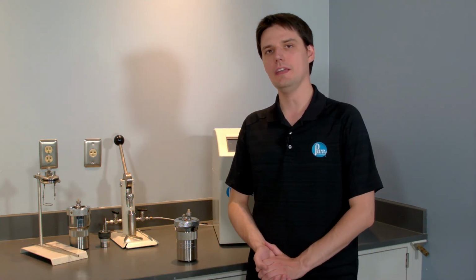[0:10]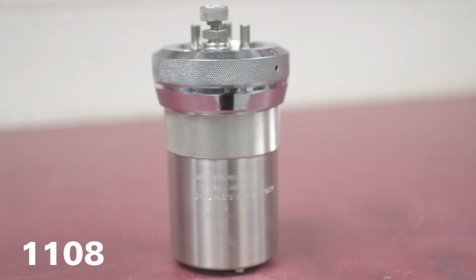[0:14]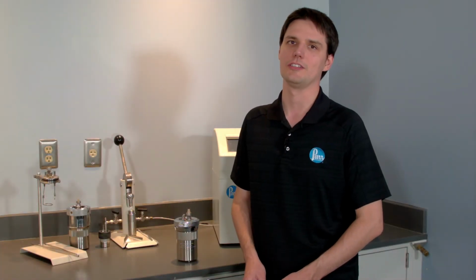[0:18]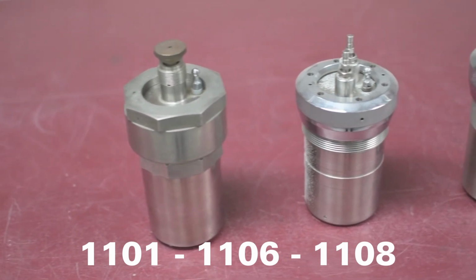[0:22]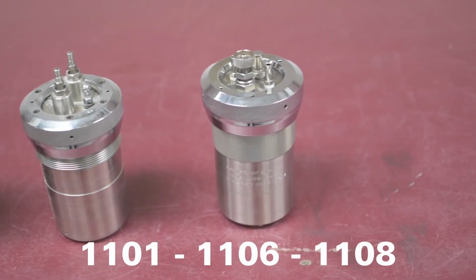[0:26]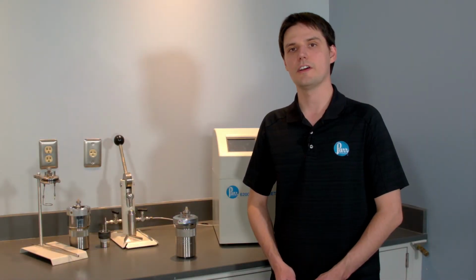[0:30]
Today we're gonna do the maintenance on the well-known Parr 1108 Oxygen Combustion Vessel. This vessel takes its roots in the early days of Parr at the end of 19th century. After numerous improvements, this design turned into the 1108 series back in 1960s. It is still massively popular and is used in a wide variety of applications. Beyond standard variants, it has been customized and tailored in every imaginable way for the variety of special use cases.
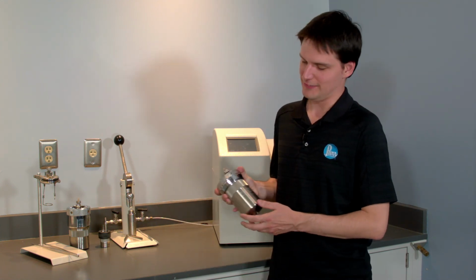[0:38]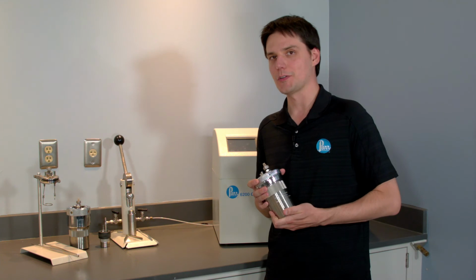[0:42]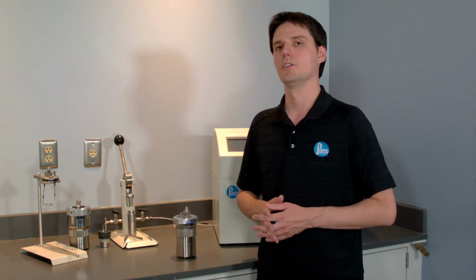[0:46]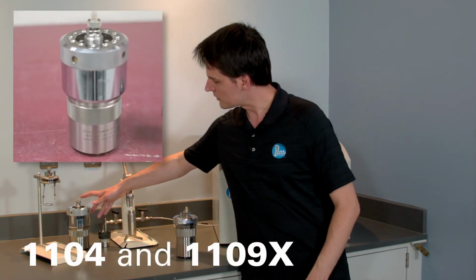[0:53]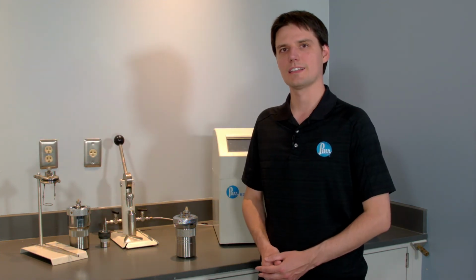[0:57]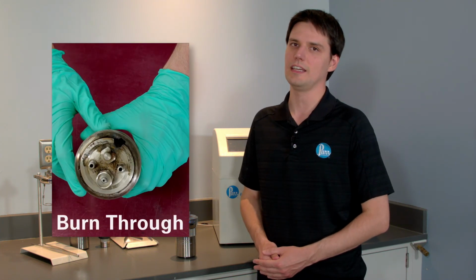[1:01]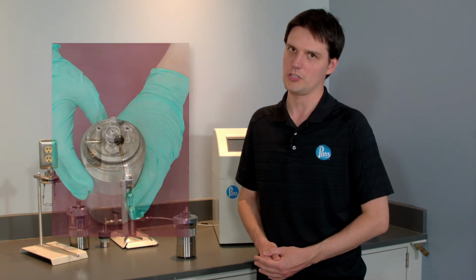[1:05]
This is a durable vessel, if one takes good care of it. To make it last, do the maintenance regularly. If even one O-ring needs to be replaced, you must replace them all. Do not overpressurize it and avoid explosives and violently burning compounds. We have special reinforced vessels for the energetic material. Watch carefully for the corrosion and inspect O-rings and sealing surfaces often. If the O-ring cannot contain the reaction, the vessel will turn into a high-temperature torch.
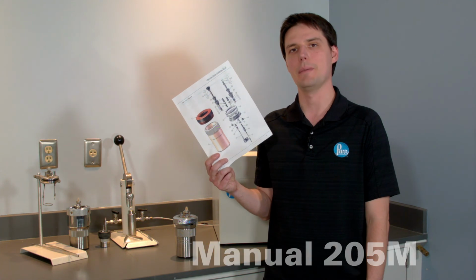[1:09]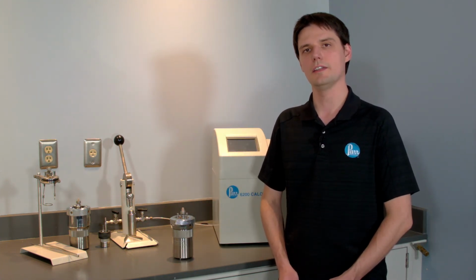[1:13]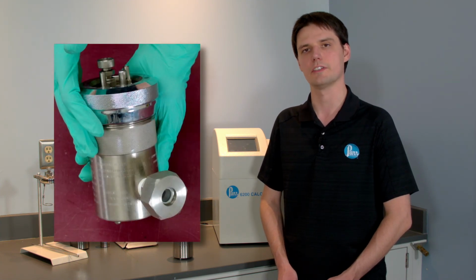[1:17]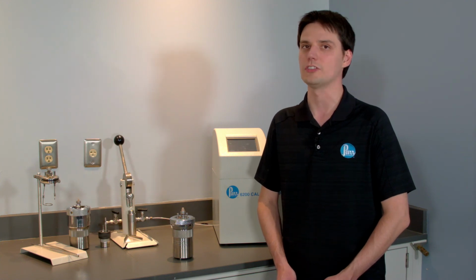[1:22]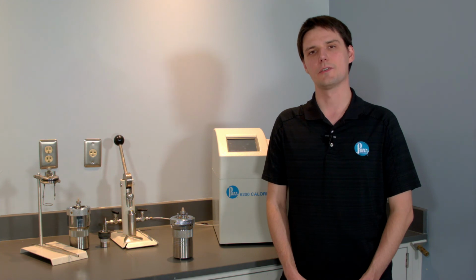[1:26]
Before you begin, grab your own copy of 205M manual. If you have a non-standard 1108 vessel, like with platinum electrodes, custom alloy electrode, pressure transducer, custom fittings, or other custom parts, refer to your specific manual or give us a call for further assistance. Wear protective gloves, glasses, and other applicable protective equipment.
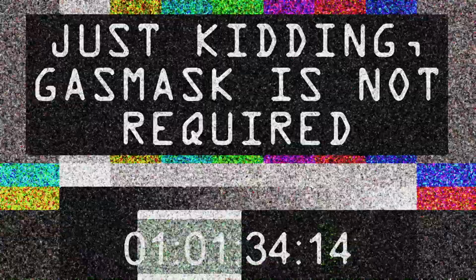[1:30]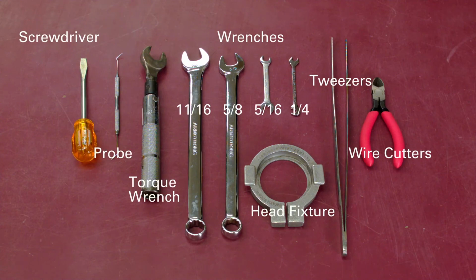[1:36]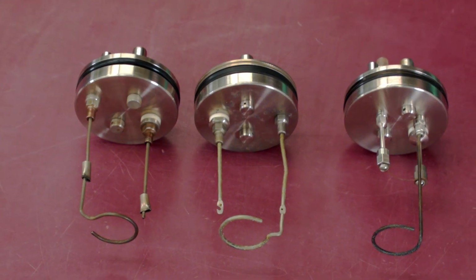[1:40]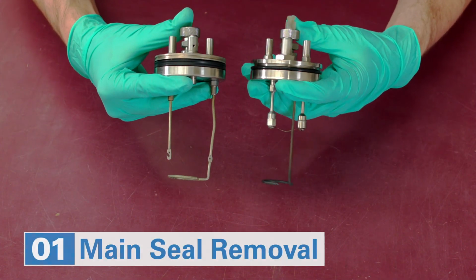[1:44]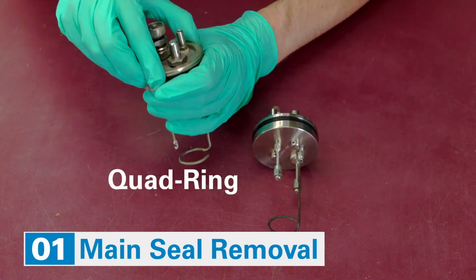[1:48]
Prepare the following tools. There are different variants of heads, but they all have just three standard types of assemblies to be serviced: needle valve, check valve, and isolated electrode. Remove the main seal. This will be an O-ring in the self-sealing style or quad ring in case of the compression sealing style.
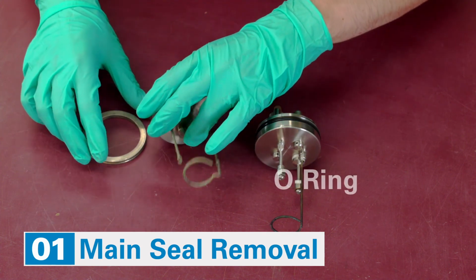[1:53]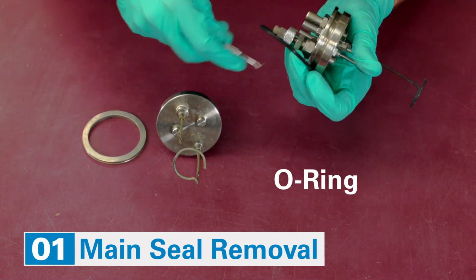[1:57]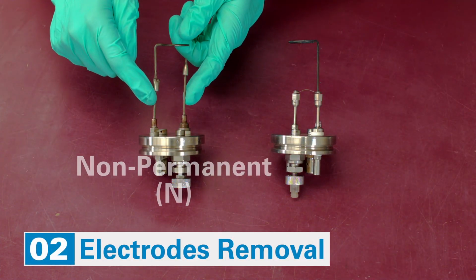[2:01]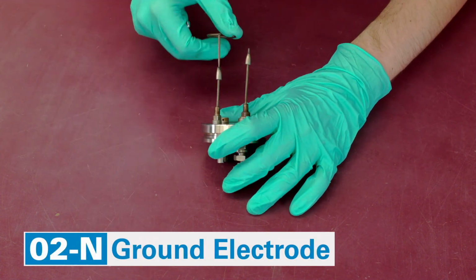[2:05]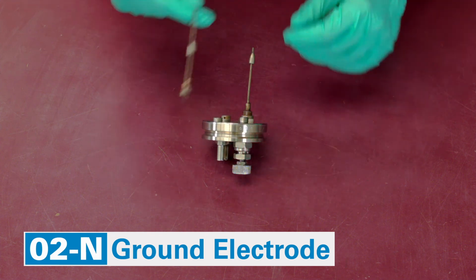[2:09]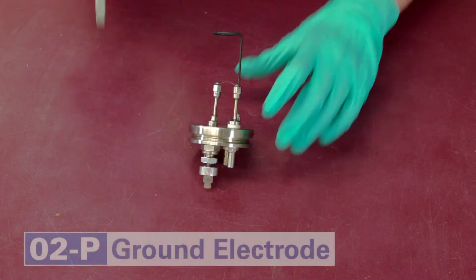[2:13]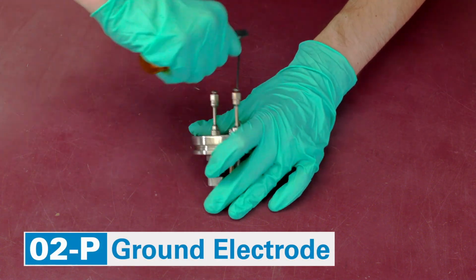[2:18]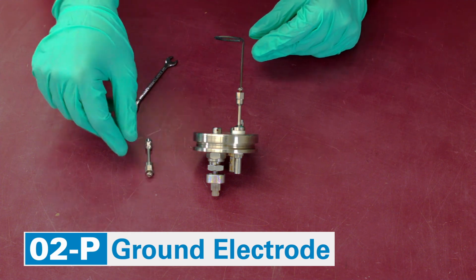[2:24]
Remove the electrodes and the loop holder. There are two electrode styles. Nonpermanent style electrodes are attached to adapters and secured with lock nuts. Loosen the nuts and unscrew electrodes. For permanent electrodes, remove the fuse wire between the electrodes. Then remove the ground electrode. Similarly, remove the loop holder.
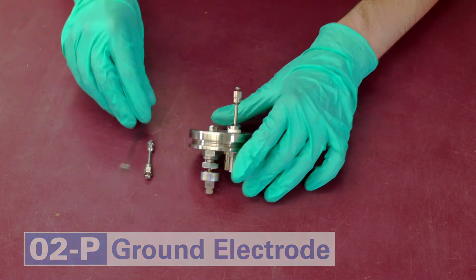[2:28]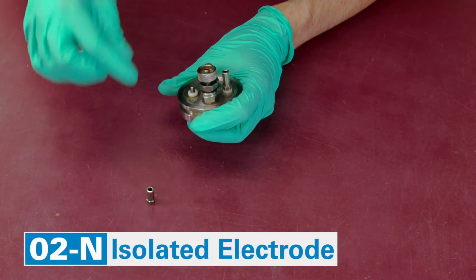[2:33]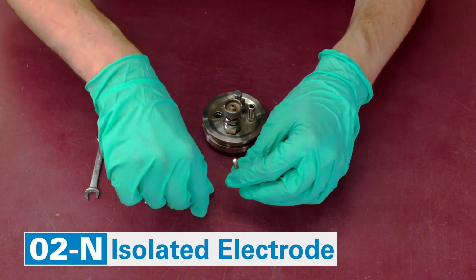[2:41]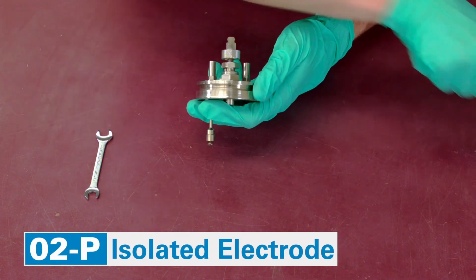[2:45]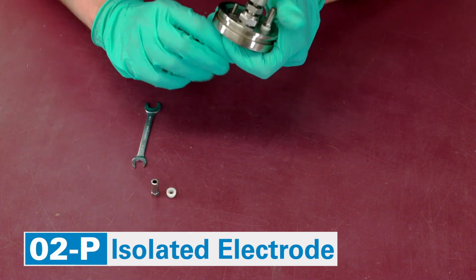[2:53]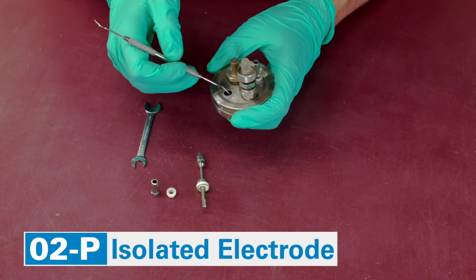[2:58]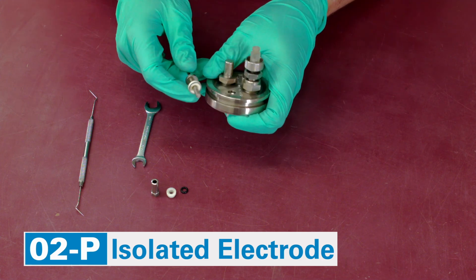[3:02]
Now remove the isolated electrode. Remove the terminal nut and the insulator. Pull out the electrode and extract the O-ring. For permanent electrodes, remove the terminal nut and the insulator. Pull out the electrode and extract the O-ring. Sleeve insulator may need to be convinced a bit more.
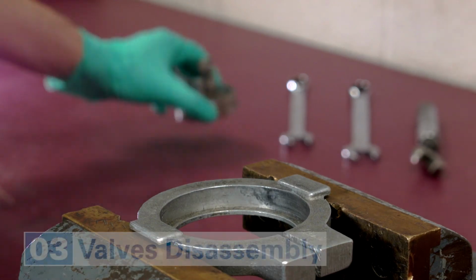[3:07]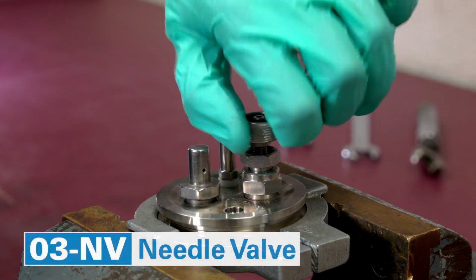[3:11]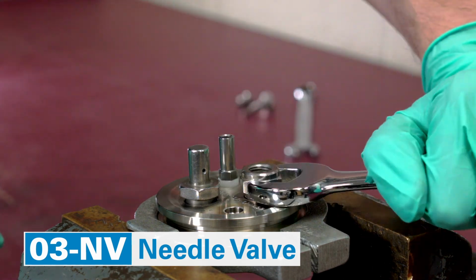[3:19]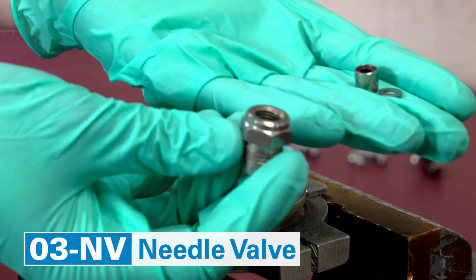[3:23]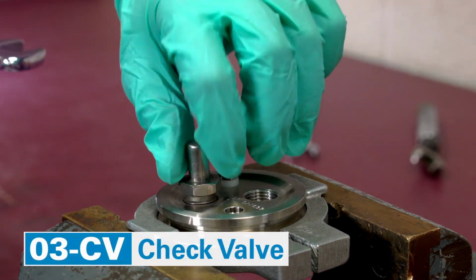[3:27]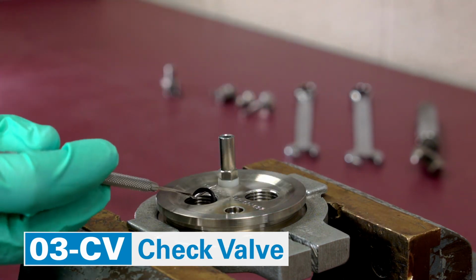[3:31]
Now it is time to put the head in the fixture and tighten it securely in the vise. Disassemble needle valve assembly. Remove the needle and then start disassembling the body by removing the compression nut. Then remove the rest of the body and do not forget to remove the valve seat. Move to the check valve. Remove the inlet valve body. Grab a check valve. Sometimes check valve is stuck. Tapping the fitting is usually sufficient to dislodge it.
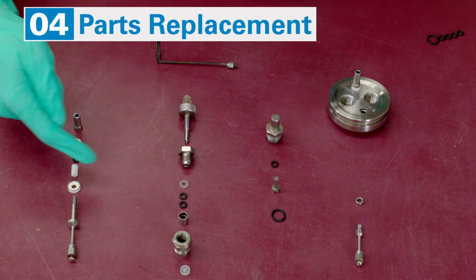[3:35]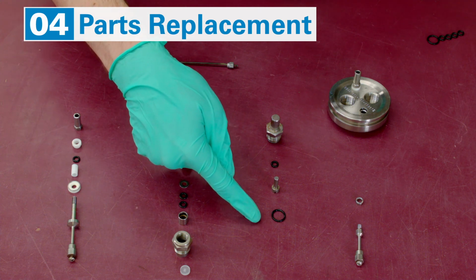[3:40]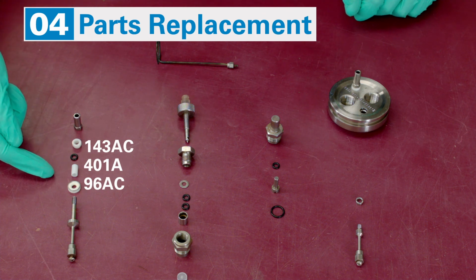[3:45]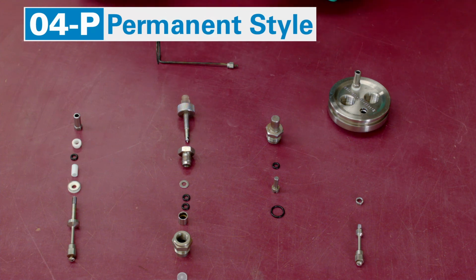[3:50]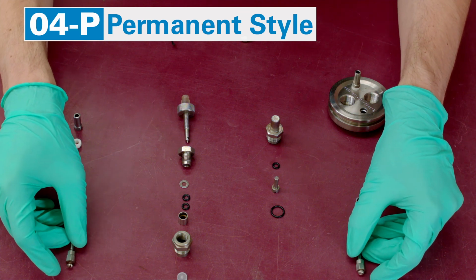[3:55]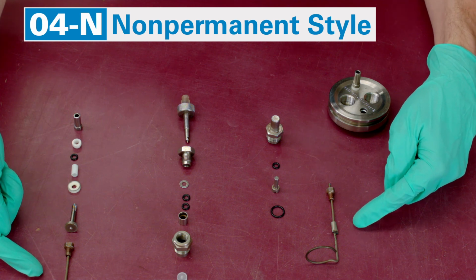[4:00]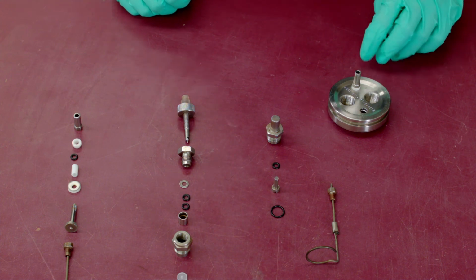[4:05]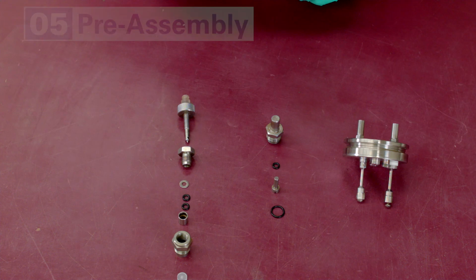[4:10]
Replace the following O-rings. And the valve seat. If the non-metal parts of the electrode are damaged, replace them as well. Inspect the sample loop holder, replace it as needed. Permanent electrode screws also need to be replaced if they are damaged. If non-permanent electrodes are in bad shape, replace them. The outside ground electrode normally does not require cleaning. However, if it exhibits unusually high resistance, disassemble and clean it as well.
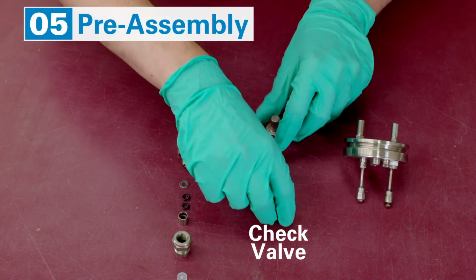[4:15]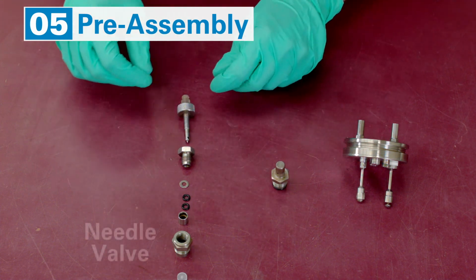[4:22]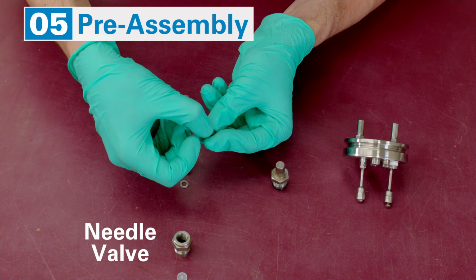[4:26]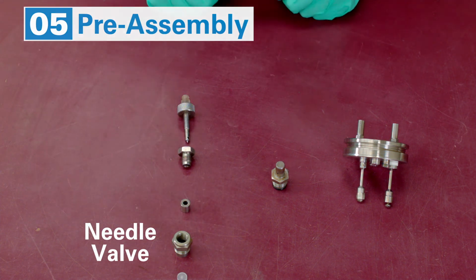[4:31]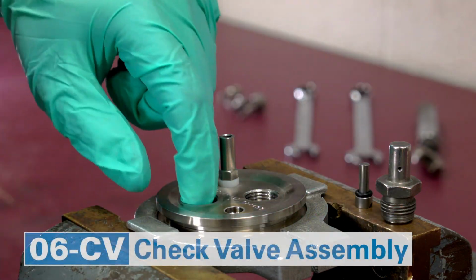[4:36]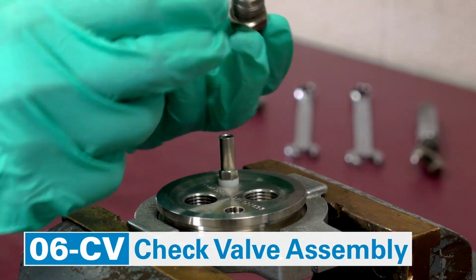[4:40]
Prepare the assemblies. Put an O-ring on the check valve and also prepare the O-ring for the check valve body. Put two fresh O-rings in a packing cup and cover them with a washer. Reassemble the check valve. Drop the O-ring in the port. Put an assembled check valve pin in the body and screw it in the port. First using fingers and then finish tightening it with a wrench, metal to metal.
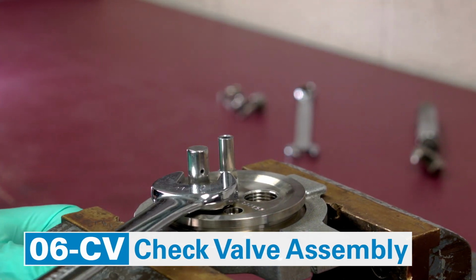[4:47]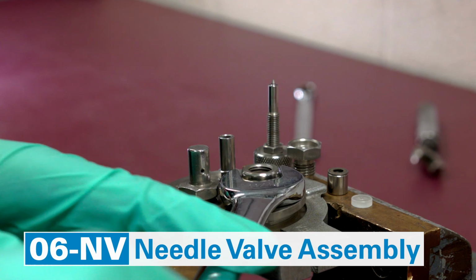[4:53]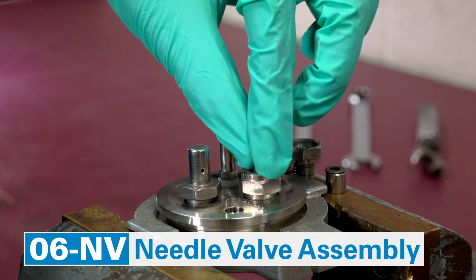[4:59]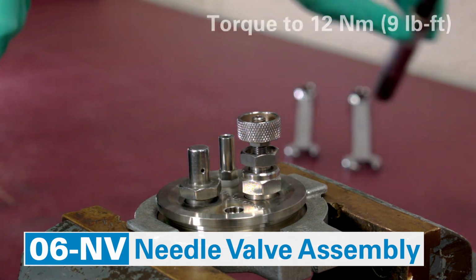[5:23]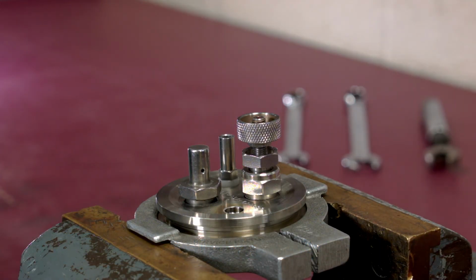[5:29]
Reassemble the needle valve. Screw in the outlet valve body and tighten it with a wrench, metal to metal. Drop the new valve seat into the body. Drop the assembled packing cup with the washer facing up. Note that there should be two O-rings in there. Screw in the compression nut until finger tight. Insert the needle assembly and screw it in until it's firm. Then loosen it one full turn. Take the torque wrench and torque the compression nut down to 12 Nm. Remove the head from the vise.
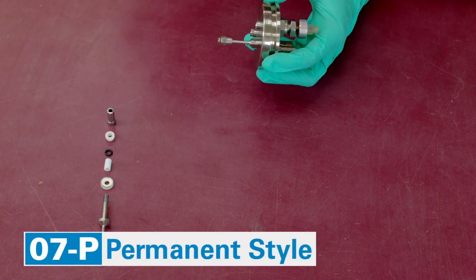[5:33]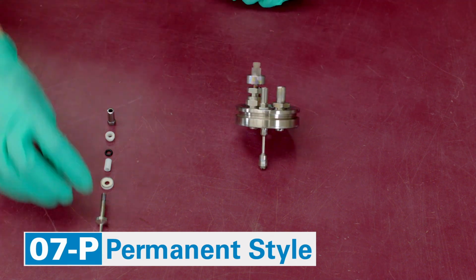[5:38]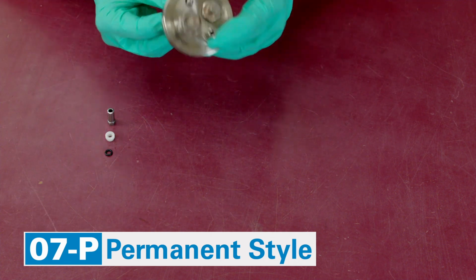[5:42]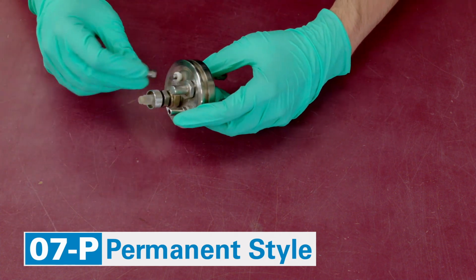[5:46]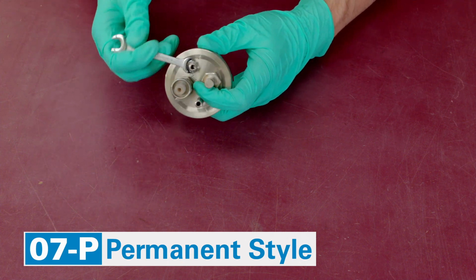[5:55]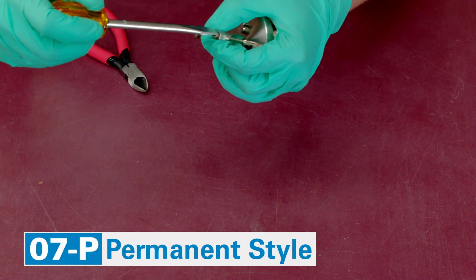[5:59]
For the permanent electrode configuration, attach permanent ground electrode. Assemble the isolated electrode core. Put a fresh O-ring and compress it with Delrin insulator. Tighten the terminal nut. Be careful that you do not over-tighten it, as you will crack the ceramic electrode insulator. Cut 5 cm of the fresh fuse wire and attach it to the electrodes using screws.
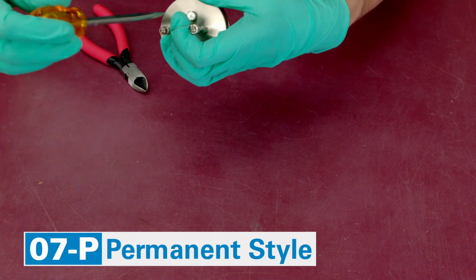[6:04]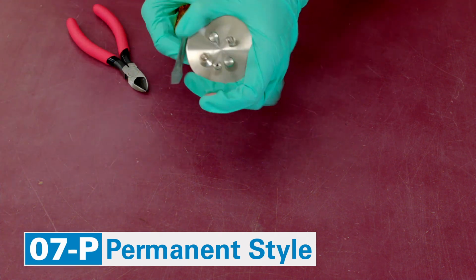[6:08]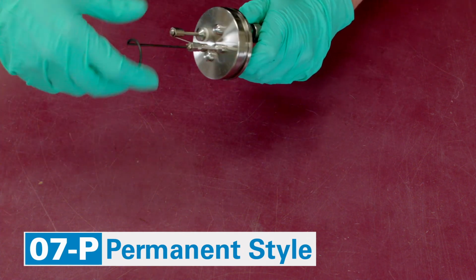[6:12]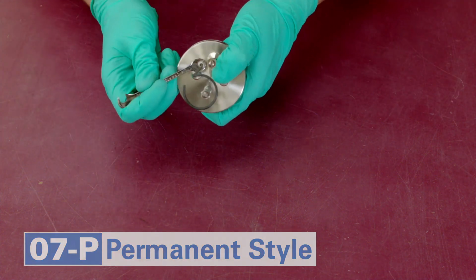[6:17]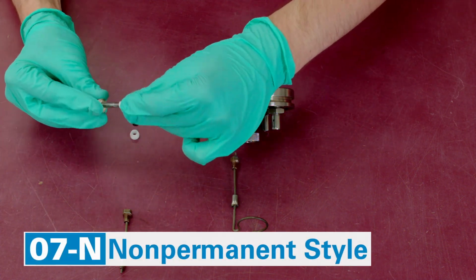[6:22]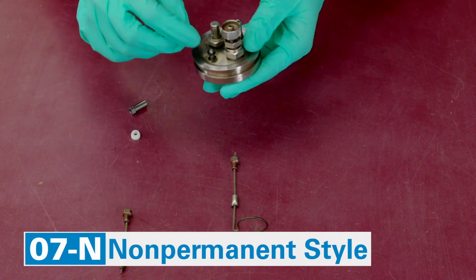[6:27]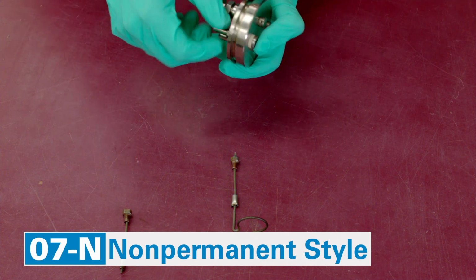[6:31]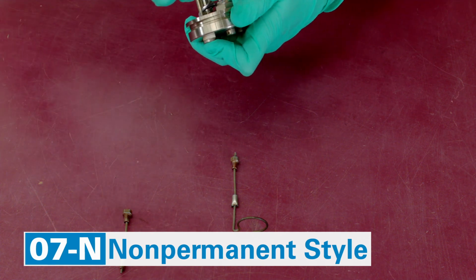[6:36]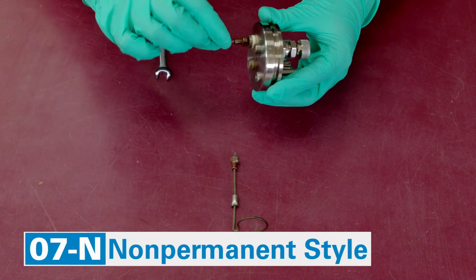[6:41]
Attach the capsule holder. The capsule holder comes in two styles. The newer one will have a permanent electrode style extension with a set screw. For the non-permanent electrode style, assemble the isolated electrode core. Put a fresh O-ring and compress it with Delrin insulator. Tighten the terminal nut. Be careful that you do not over-tighten it, as you will crack the ceramic electrode insulator. Attach electrodes into the adapters and secure them with lock nuts.
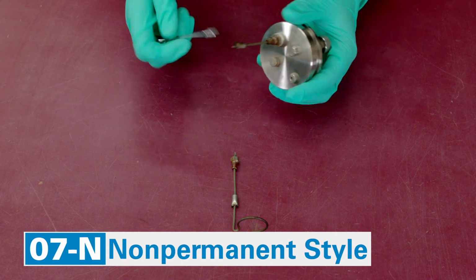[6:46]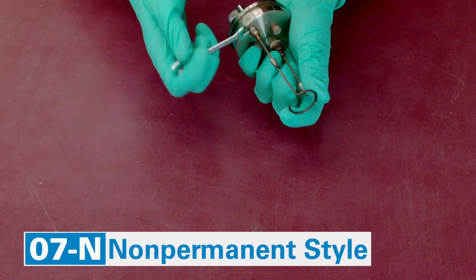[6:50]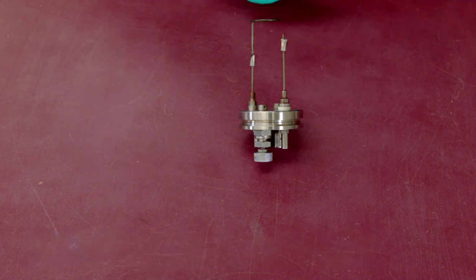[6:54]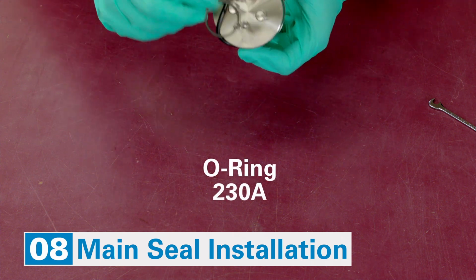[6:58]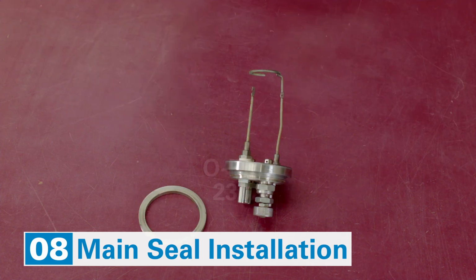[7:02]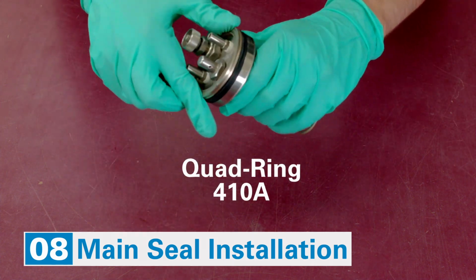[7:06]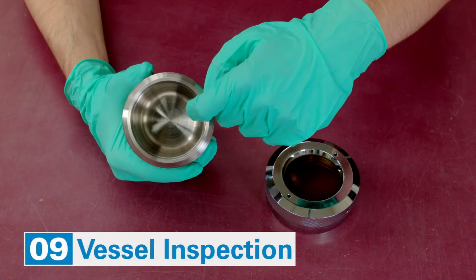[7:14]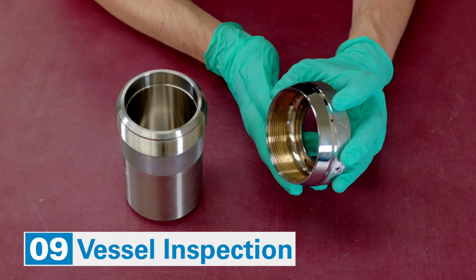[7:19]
Get a fresh O-ring and put it in place. For the other style, get a quad ring and put it in the groove and cover it with a contact ring. Your head is now ready. Visually inspect the vessel cup. Note the condition of the sealing surface. Visually inspect the screw cap. Make sure that it's free of deformities and that the threading is in a good shape.
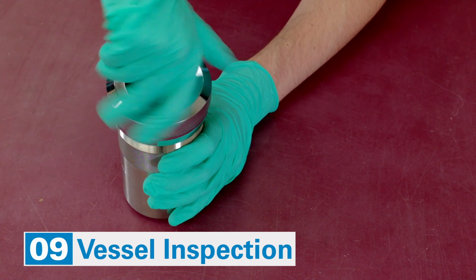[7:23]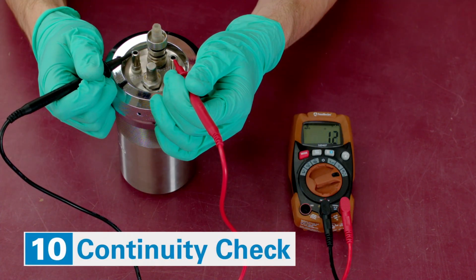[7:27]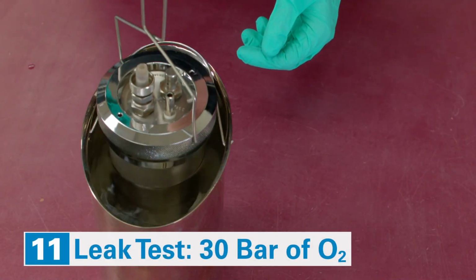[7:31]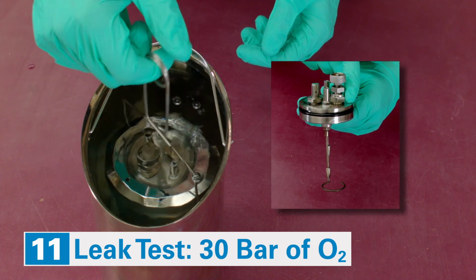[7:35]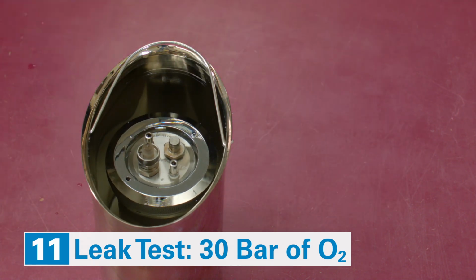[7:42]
Take a multimeter and check the resistance between electrodes. Pressurize the assembled vessel. Put the vessel in the bucket with the water and watch for bubbles in the valves and electrode area. If none are observed, your vessel is good to go.
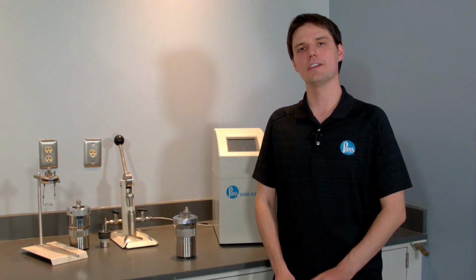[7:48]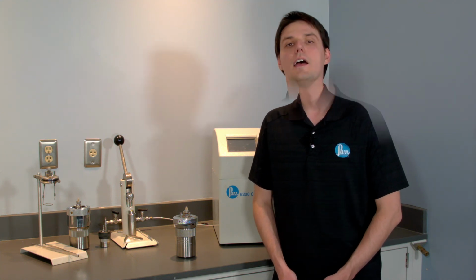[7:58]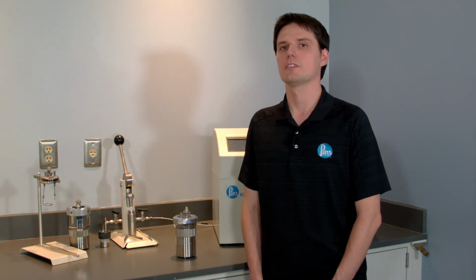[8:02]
You should do maintenance every 500 combustions or every half a year, whichever comes first. You should also do the maintenance if you see any degradation of the O-rings. Additionally, you should send in the vessel for the factory reconditioning, safety dimensional inspection, and hydro testing after each 5,000 combustions. Also send in the vessel after overpressure event or if any damage to the vessel is present. Contact us or your local authorized distributor for further assistance.